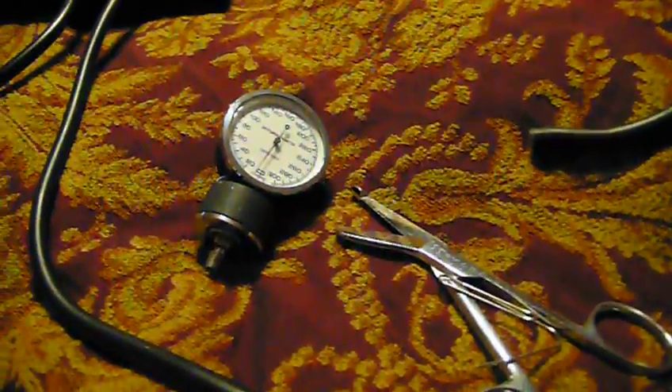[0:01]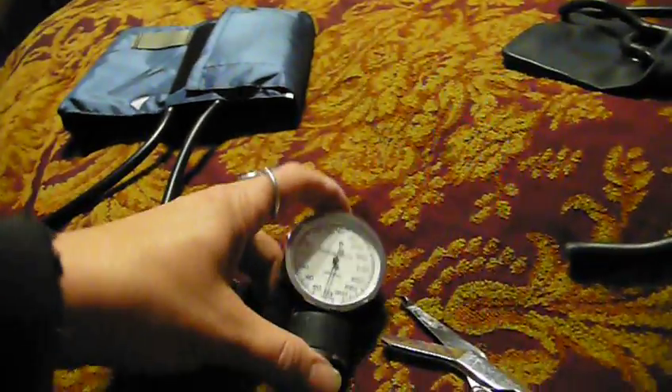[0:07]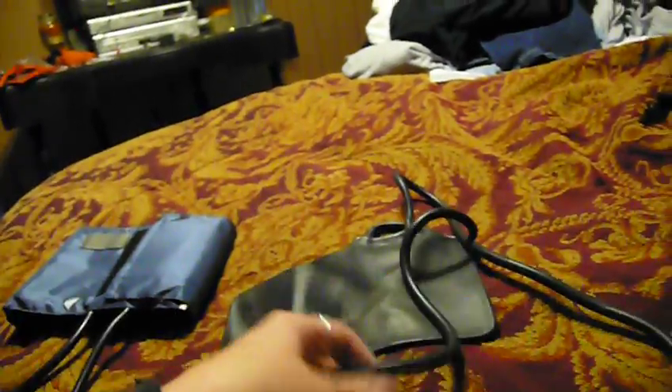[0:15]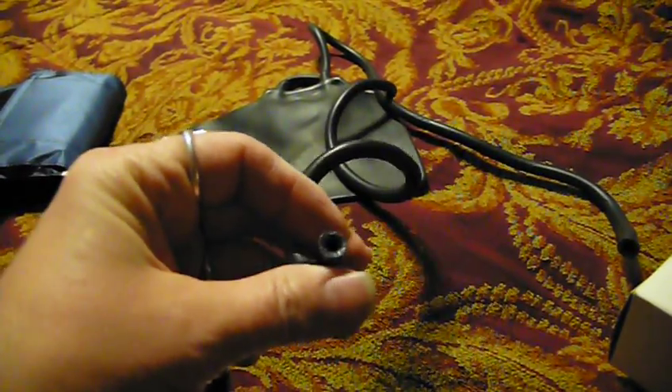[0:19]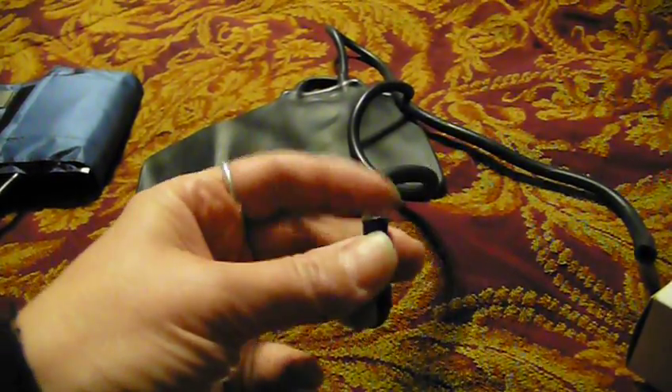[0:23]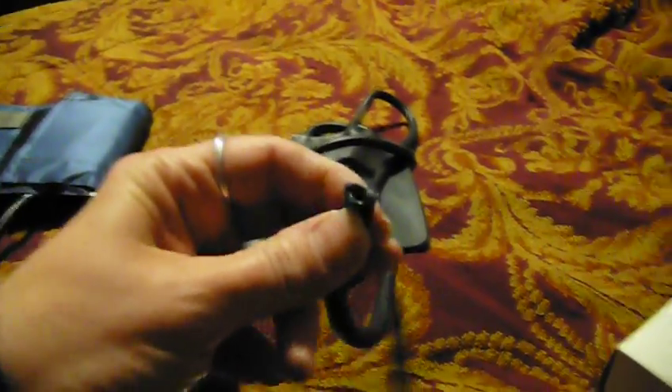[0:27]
Okay, today I'm going to show you how I changed out my sphygmomanometer, or my blood pressure gauge, and my pump into a new bladder and cuff. So I have this old bladder, and you can see it's kind of old and cracked, and it sticks, and thus the gauge just pulled right off. It just was so old and sticky.
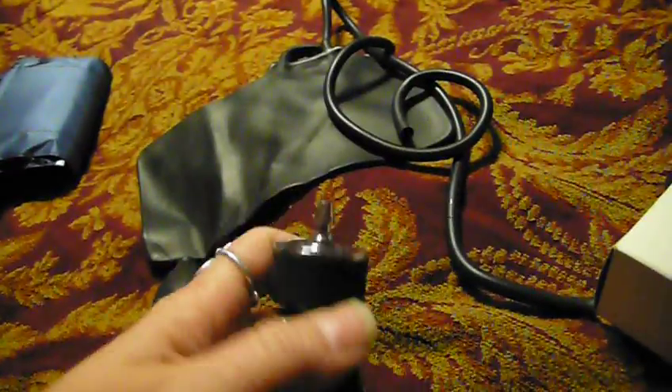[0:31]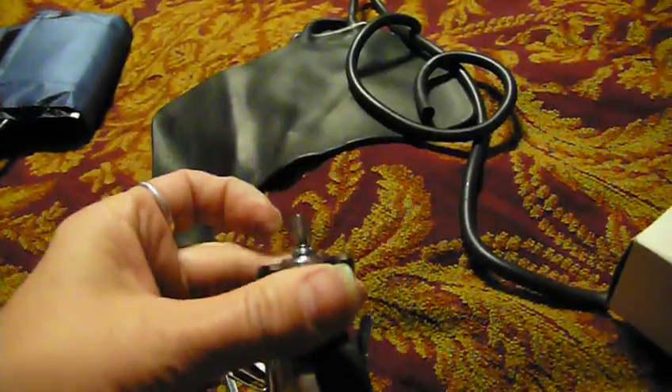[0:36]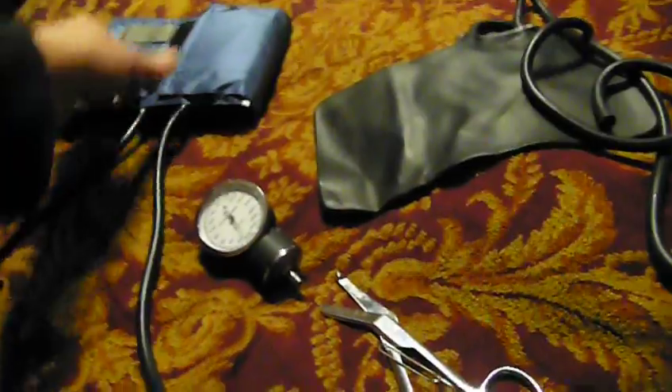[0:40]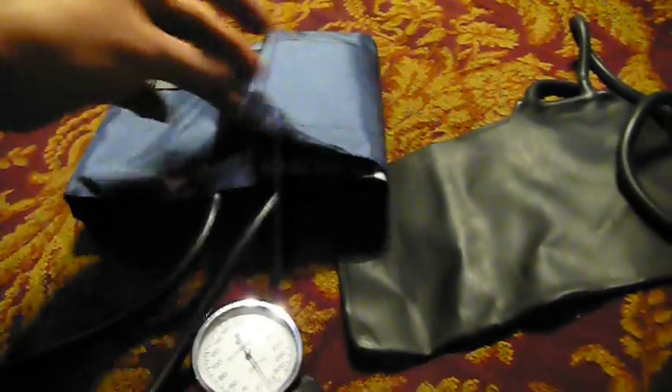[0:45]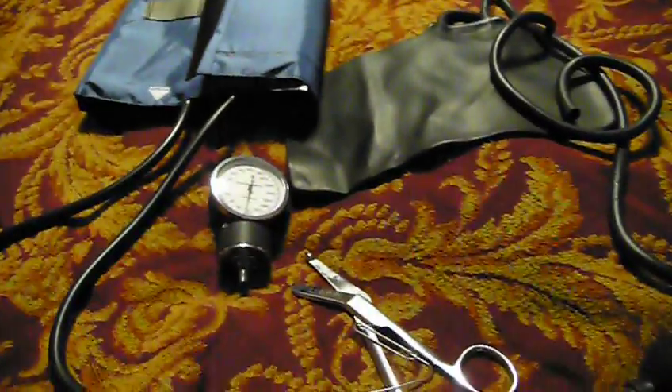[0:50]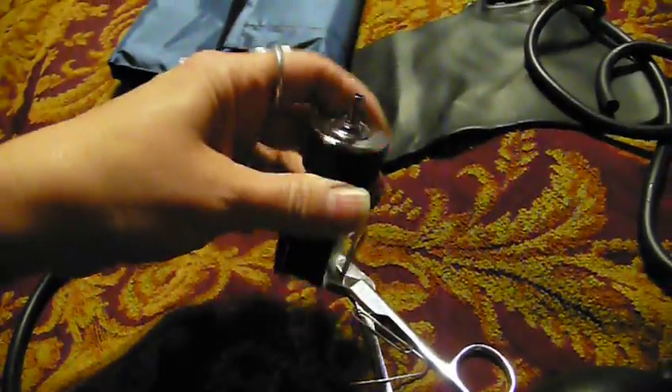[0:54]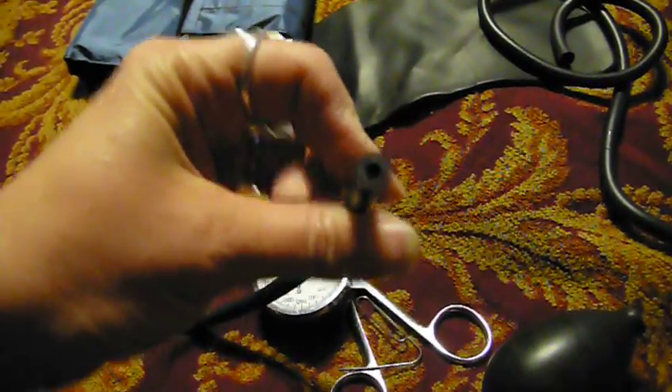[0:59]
So you clean off the gauge, and the little nipple valve on both of them. The bulb goes on the adult's side, and the pressure one goes by the artery. So once they're cleaned off, you just put the valve inside the hose, the empty little hose, and start twisting it and pushing it on.
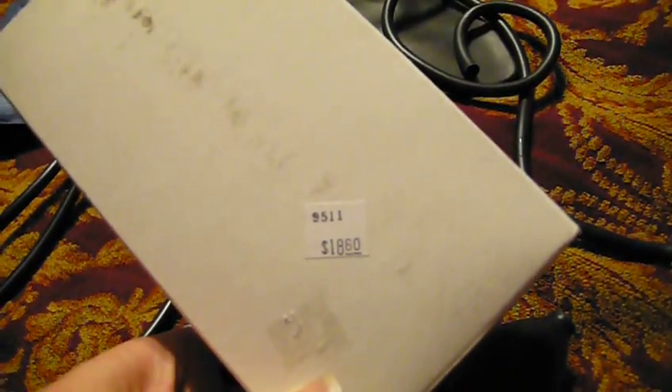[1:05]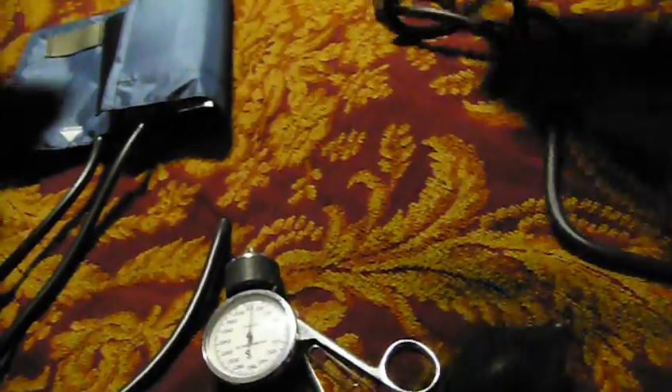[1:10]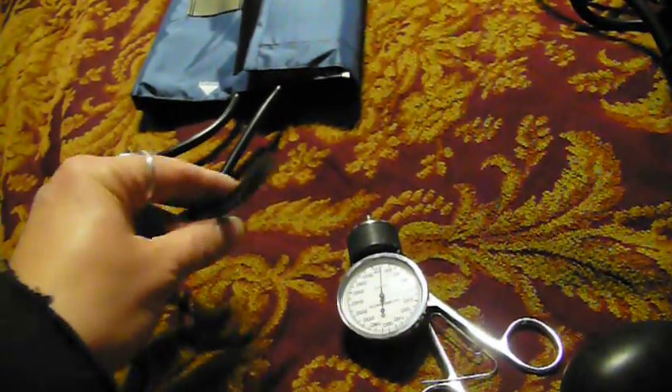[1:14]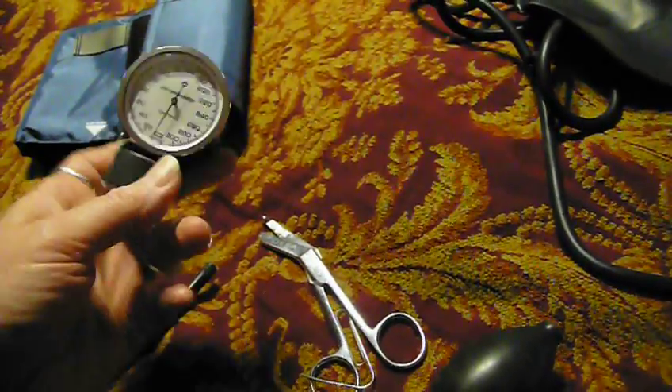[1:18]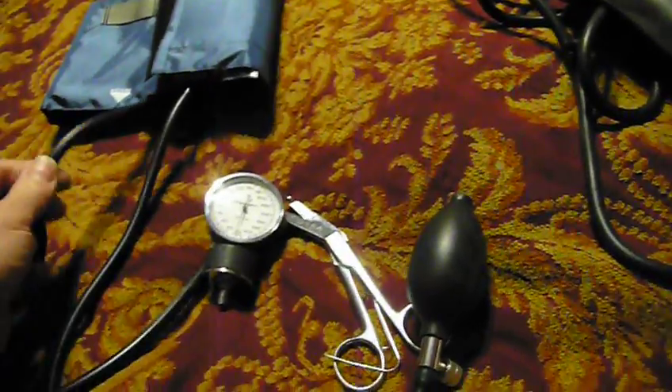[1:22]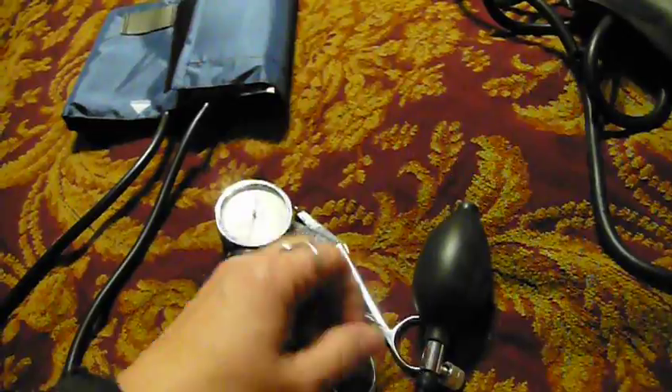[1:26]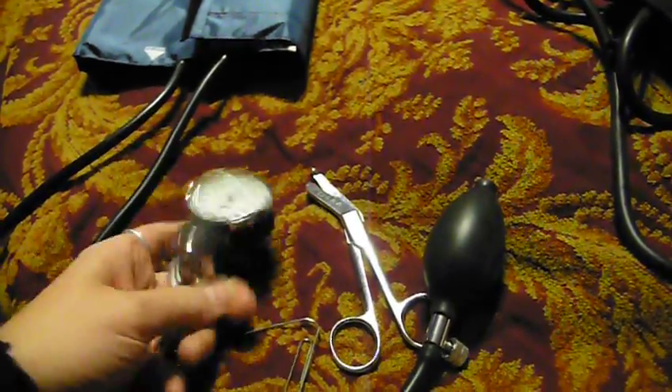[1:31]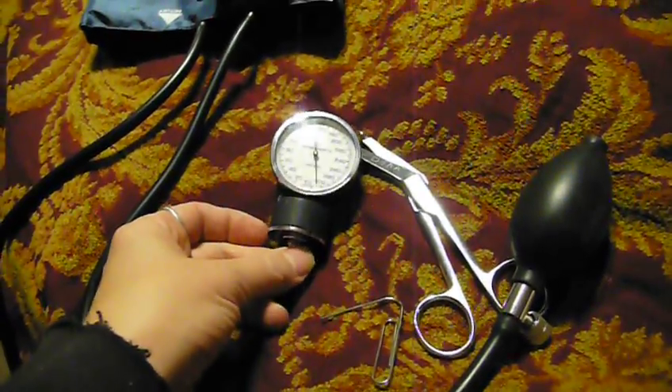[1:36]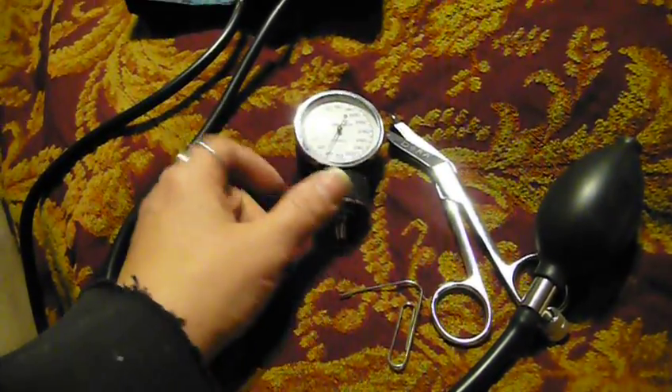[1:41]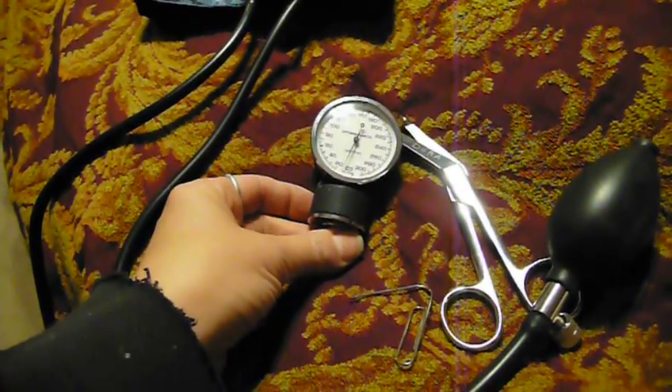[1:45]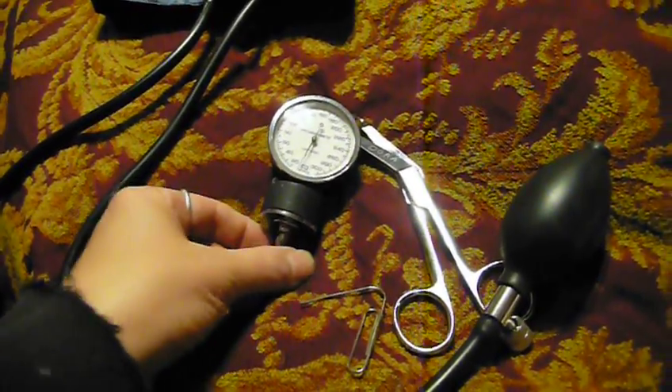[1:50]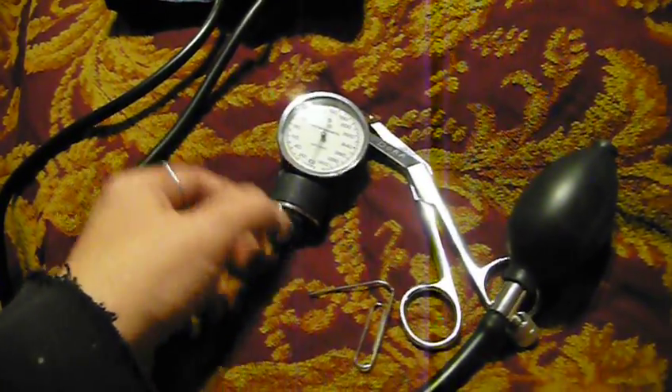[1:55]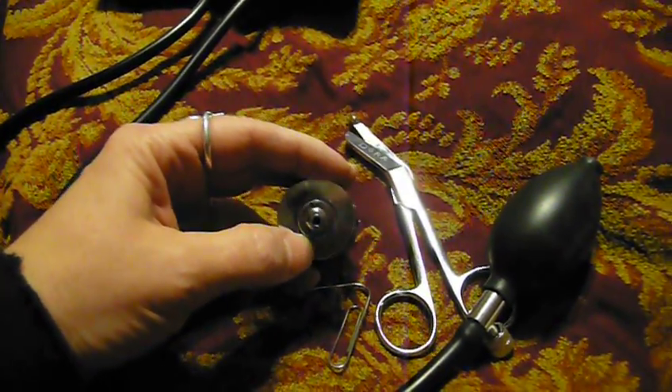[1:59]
when I was taking off the old one and cleaning off the little black sticky part from the other valve, it got twisted and it got off of zero. And it was actually stuck at 180. I couldn't figure out how to get it to zero, and I looked online and on YouTube, and basically the videos say, oh, you just twist this little valve at the bottom. That is great, but it did not work for me, because this little ring around is actually a nut.
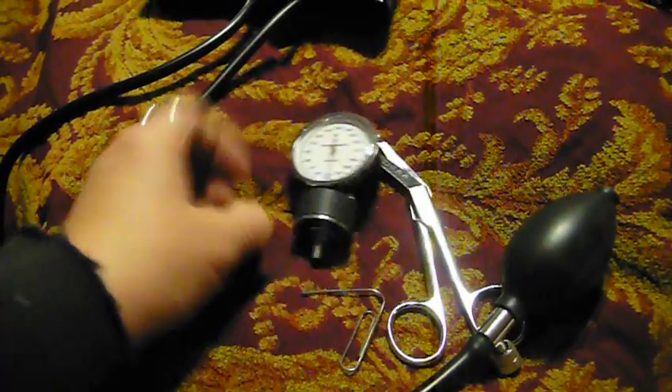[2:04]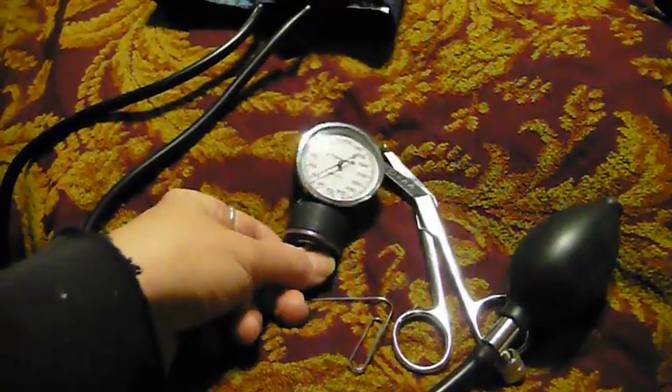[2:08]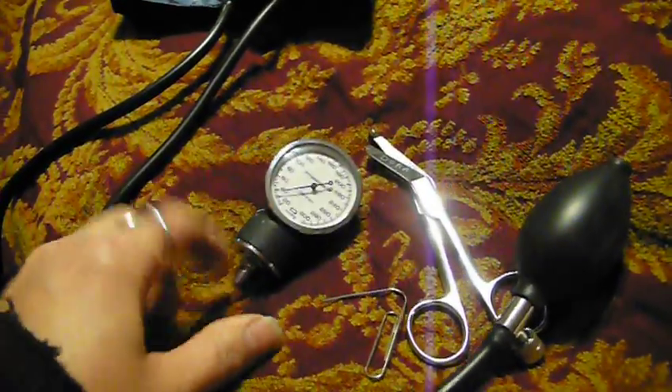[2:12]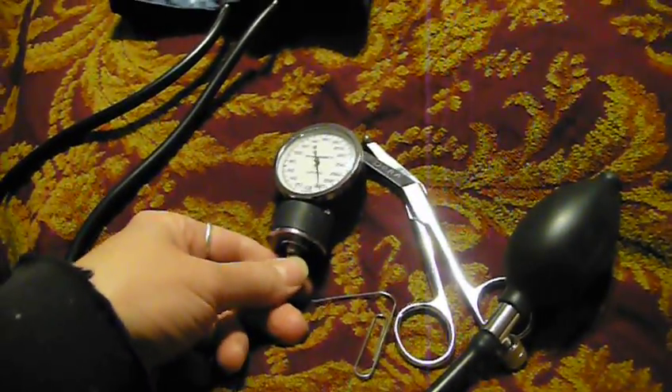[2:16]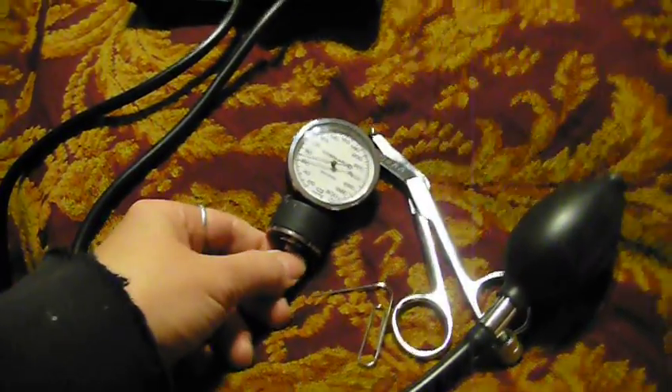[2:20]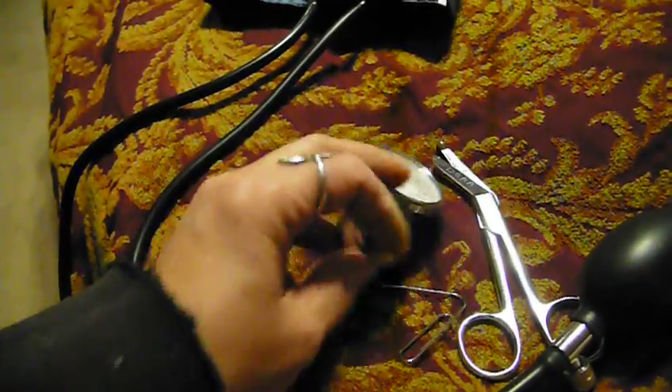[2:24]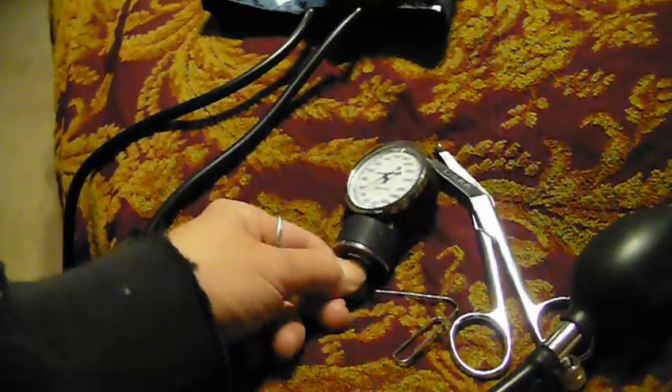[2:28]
And so if these two are stuck together, you squeeze it in and it gets stuck. Okay, so that's tight, right? And if I try to move this, it would have to go all the way around, or it would be loose. See, if I get it to zero, it's loose. So I kept having a problem. I'd screw it and, see, now it's getting further and further away. So what I realized is I want to get it as close to zero as I can, and then you hold
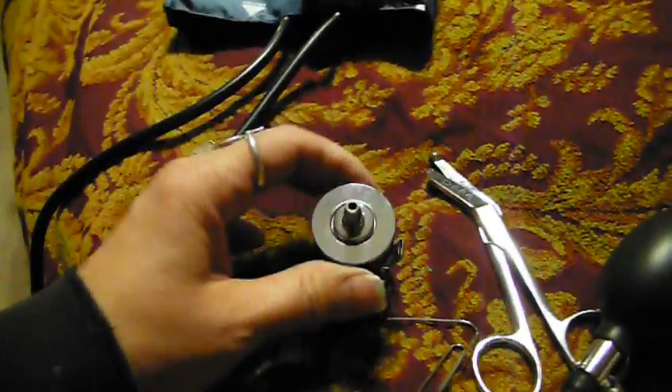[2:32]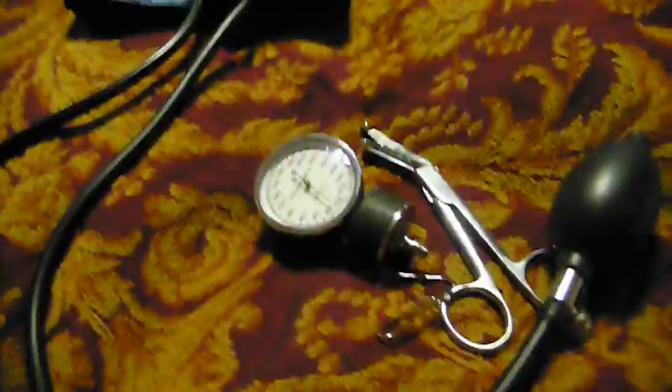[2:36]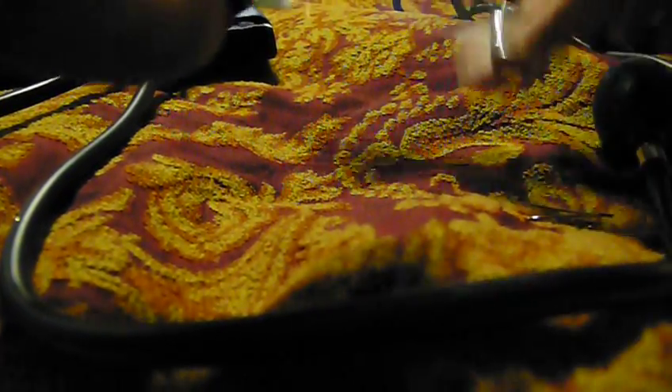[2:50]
the valve in the center with pliers. I just used some bandage scissors, this part right here on my bandage scissors. You can see, and I unscrewed it. So now I'm going to put it back as close to zero as I can, but this valve is still loose. So I just took a paper clip, I held the valve in place, and I used the paper clip to tighten up that nut.
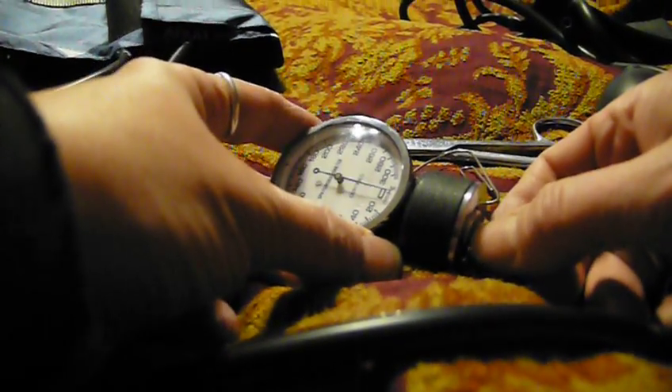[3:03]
And I looked online, I couldn't find anywhere that explained that. So you tighten that up, get it as close to zero as you can, hold the valve in place, and use it. There's a tool, I'm sure, that is made for this specifically, but I just used a paper clip. Okay? See, now it's tight, and if I move it a little bit, I can get it to zero. And then just hold it, and even if you went back past zero a little bit and then tightened it up, that way when you move it with your gauge, you've got it, or you use your bandage scissors or whatever to tighten it up.
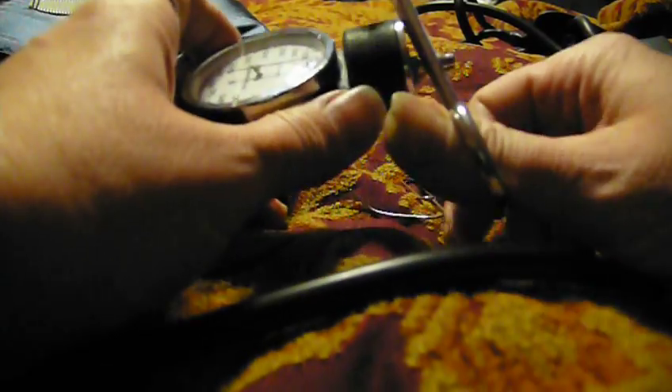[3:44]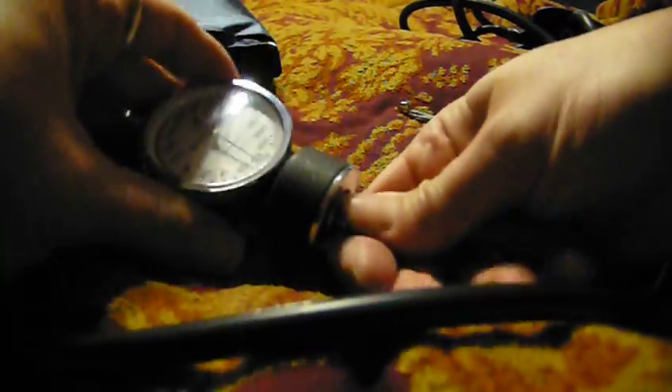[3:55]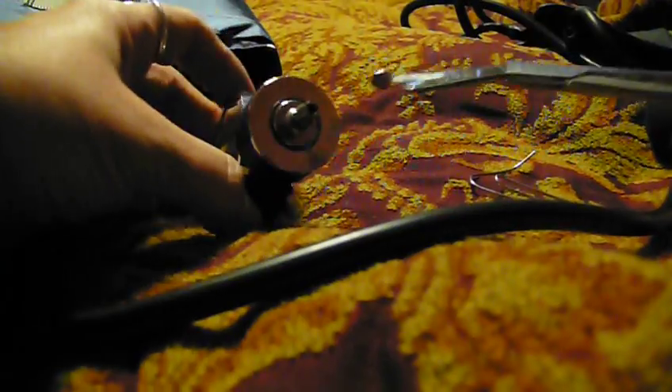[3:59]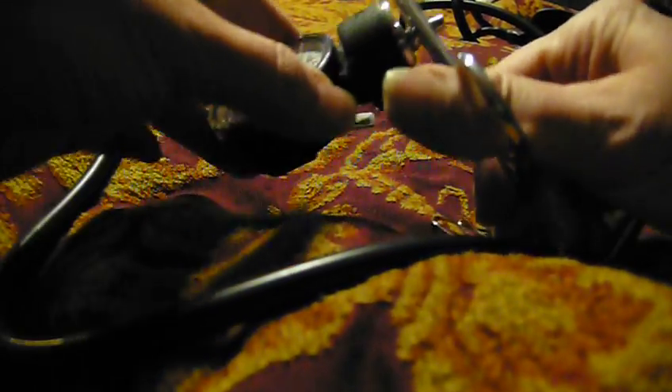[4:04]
Okay, see, it's tight and it's almost on zero. It's really close. So I'll just take my bandage scissors and tighten it up a little bit more. Anyway, that's how you do it. Most of them just say take pliers and go back and forth a little bit with the pliers. But nobody, even in the written ones I looked up, explained that little disc there. So I was extremely frustrated with that. But if you had pliers, it would work better, if you're only a few degrees off.
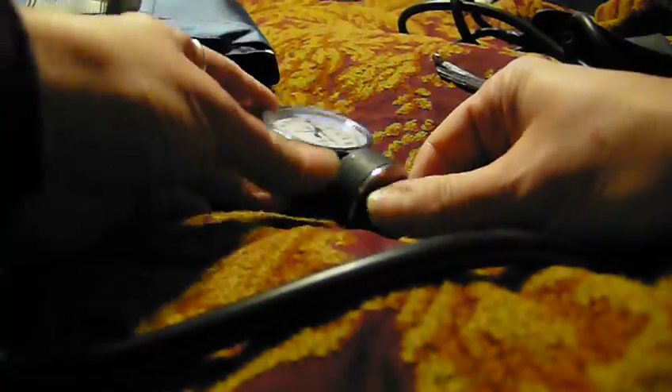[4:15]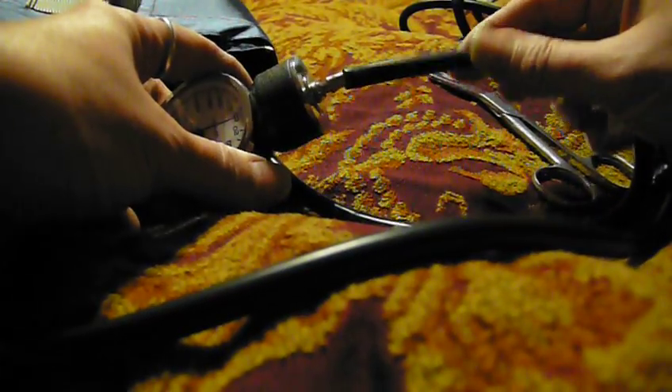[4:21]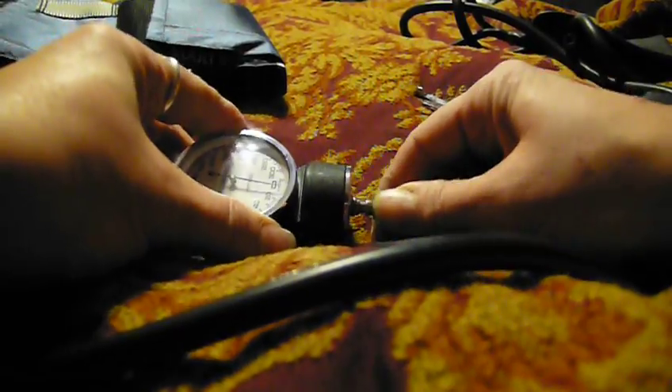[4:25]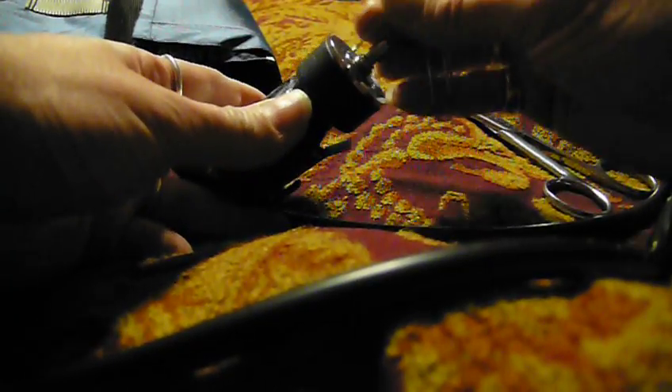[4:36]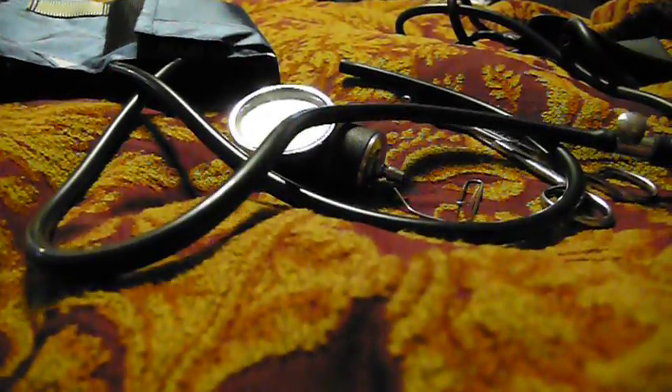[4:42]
So now it's kind of tight, but I grabbed some pliers. It would move right onto zero. It's pretty close right now. And then once you've done that, basically you would just push this on all the way. But I'm just going to grab some pliers and tighten it up there. If you were at work, this probably would work, if you got a set of clamps, and then just use your paper clip to tighten it up. So anyway, that's how you do it, and it should be good to go from there.